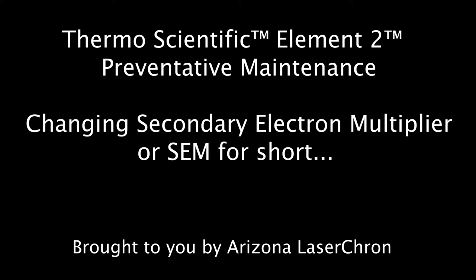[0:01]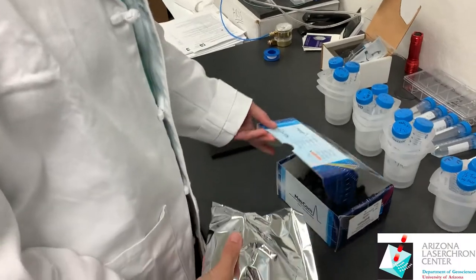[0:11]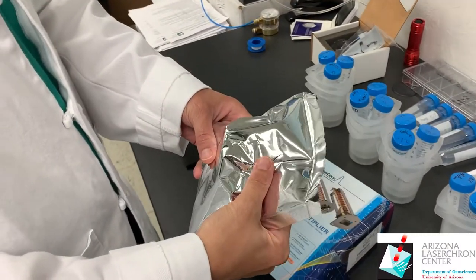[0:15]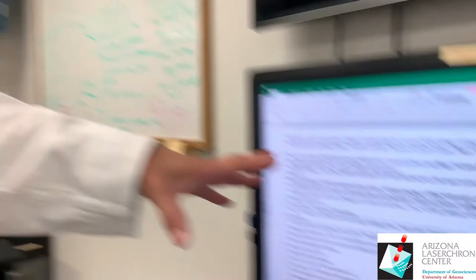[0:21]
Morning, we're going to be changing out the secondary electron multiplier in the Thermo E2 mass spectrometer. First thing you do after you take it out of the box is squeeze the pillow. You want to make sure that the argon is trapped inside there. These are all the instructions we're going to be following.
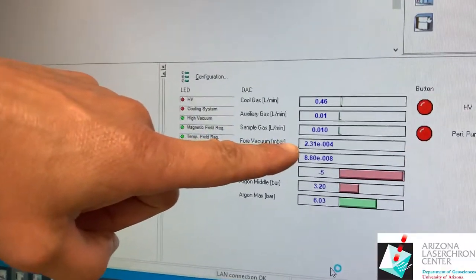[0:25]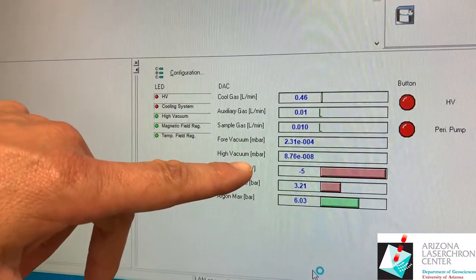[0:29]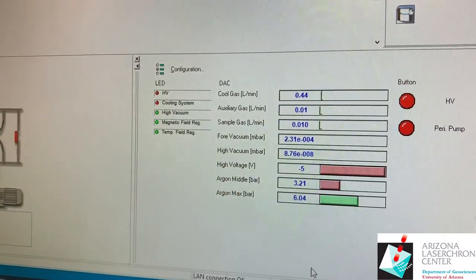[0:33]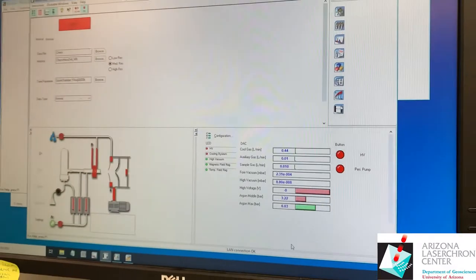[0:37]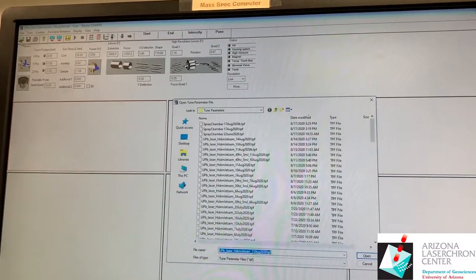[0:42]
The fore vac is maxed out at 2.31 times 10 to the negative 4, and the high vacuum is at 8.8 times 10 to the negative 8. It's good to note these pressures so that you know where you started. And we're going to open the most recent tune file.
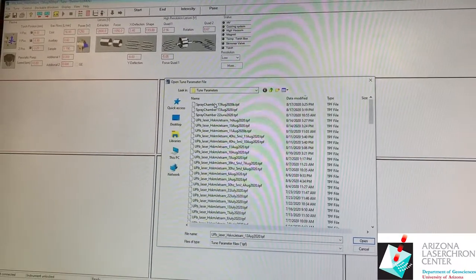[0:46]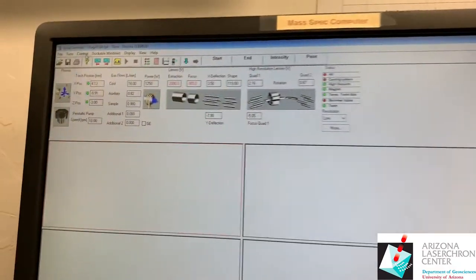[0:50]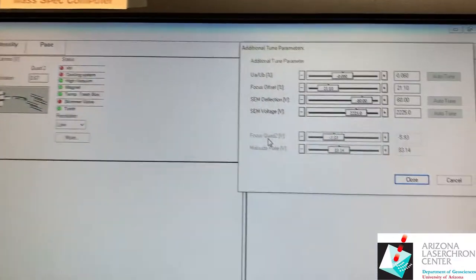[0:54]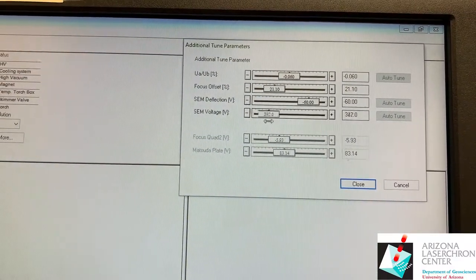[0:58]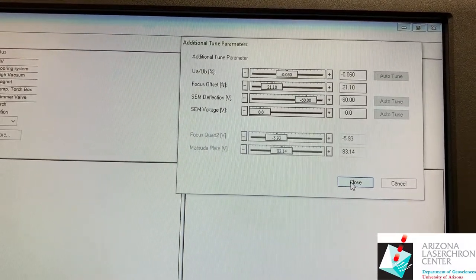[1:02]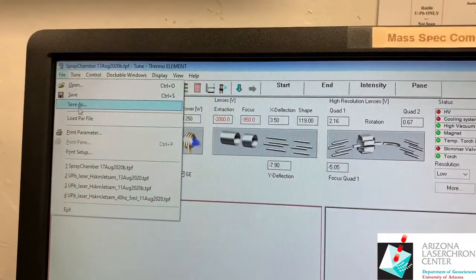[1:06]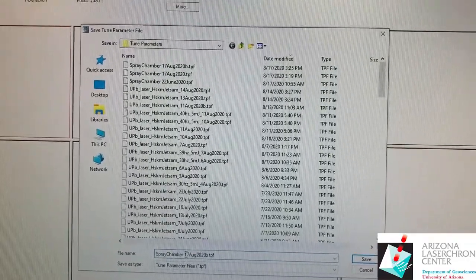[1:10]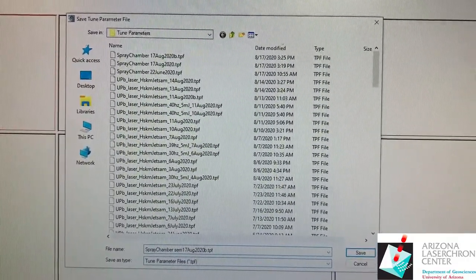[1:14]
And we're going to go to control, additional parameters. The SEM voltage was set at 2225. We're going to take the SEM voltage and set it to 0 and hit close, because that'll save it. And then we're going to go file, save as, spray chamber, SEM 0.
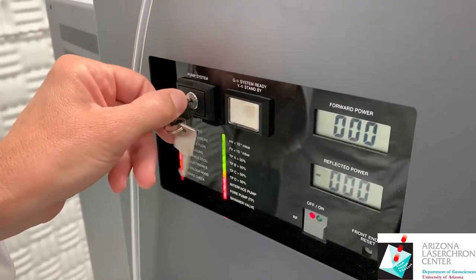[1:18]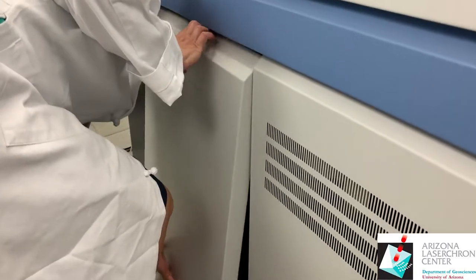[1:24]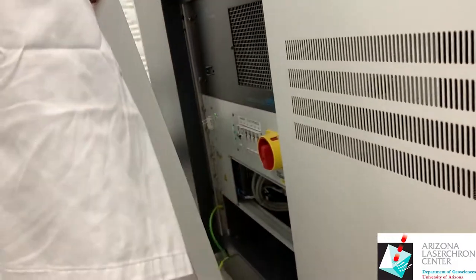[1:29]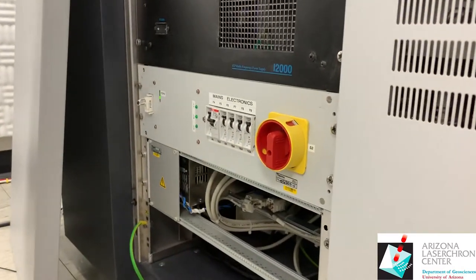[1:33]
Now we wait for the turbo pumps to wind down. We're going to turn off S2, which is the electronics.
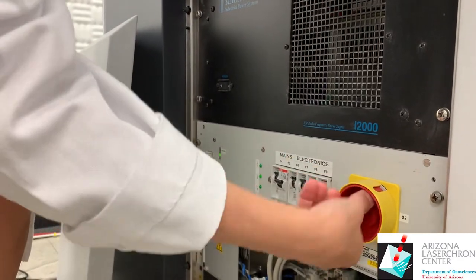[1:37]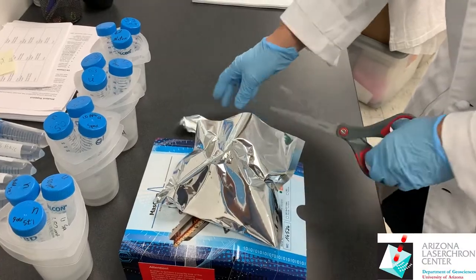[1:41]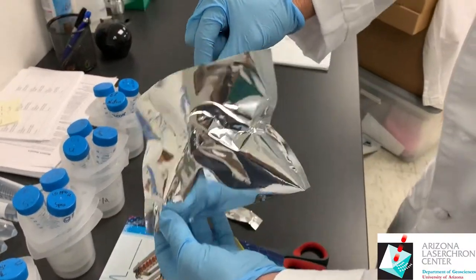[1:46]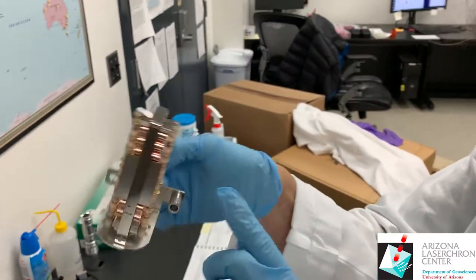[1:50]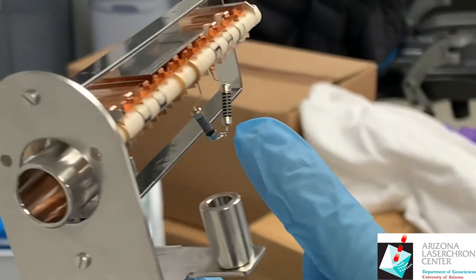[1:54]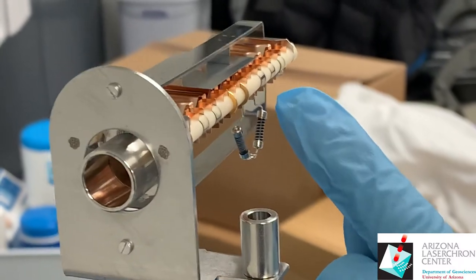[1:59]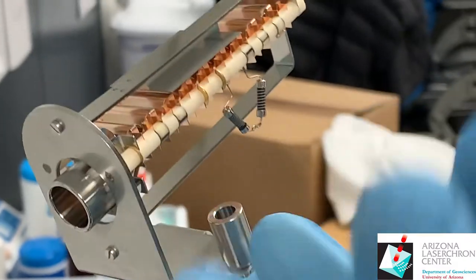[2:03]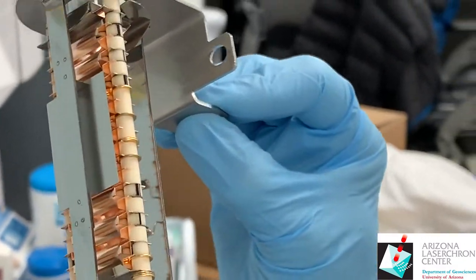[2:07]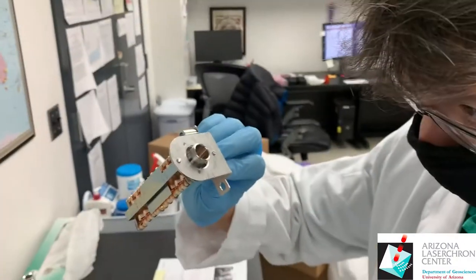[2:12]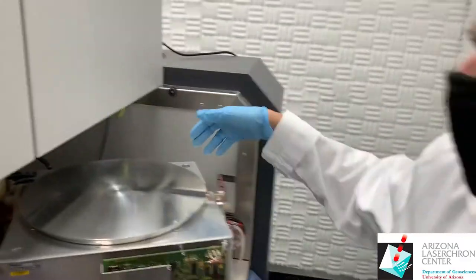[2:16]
You want to take this thing out and you want to look at it. So there's two resistors on this one. One resistor or two, it doesn't matter. And make sure that the connections look good. There's no wires sticking out. Look at the surface, make sure it's not bent. Nothing bad happened during transport. Looks good. All right, now we'll remove the cover.
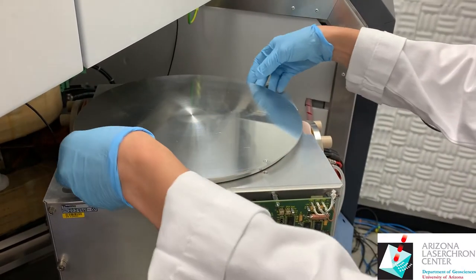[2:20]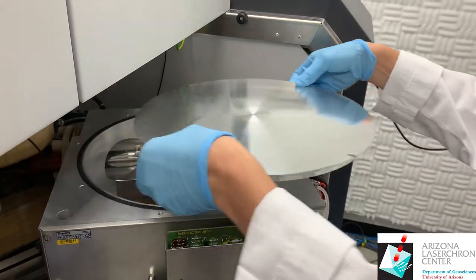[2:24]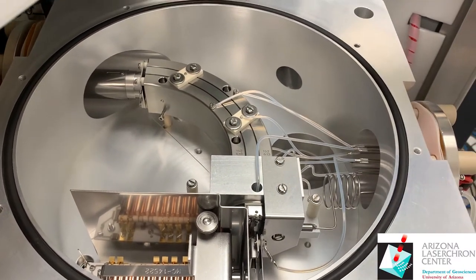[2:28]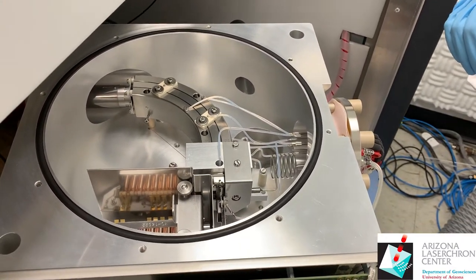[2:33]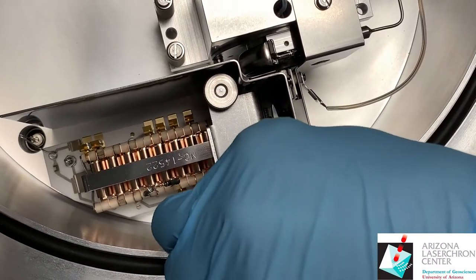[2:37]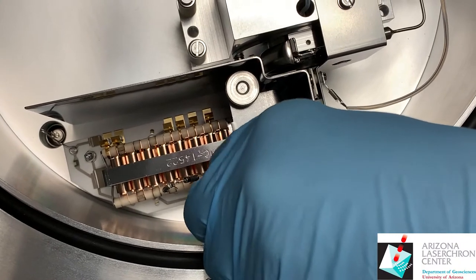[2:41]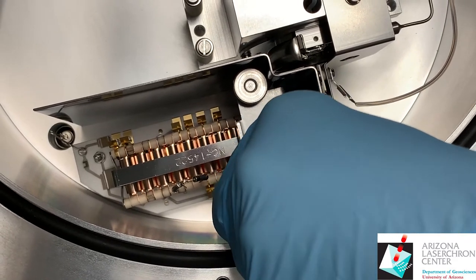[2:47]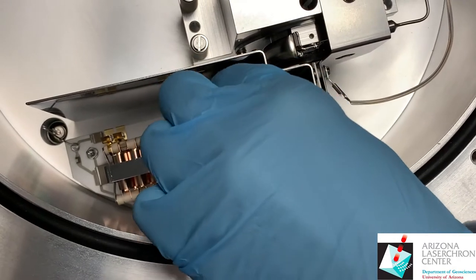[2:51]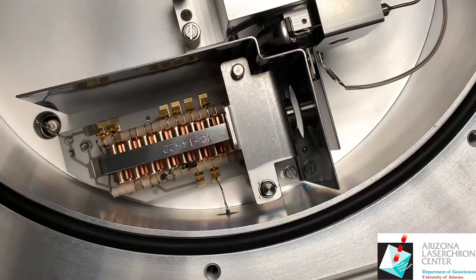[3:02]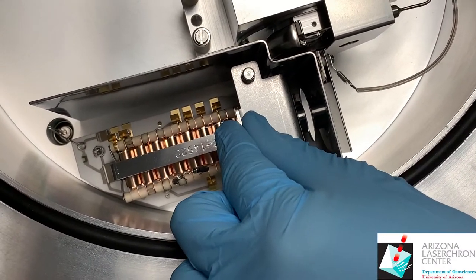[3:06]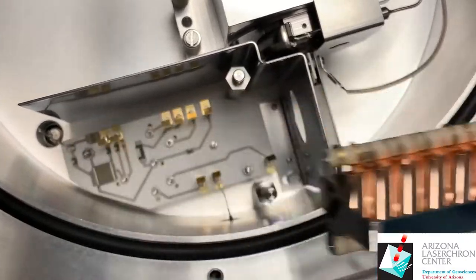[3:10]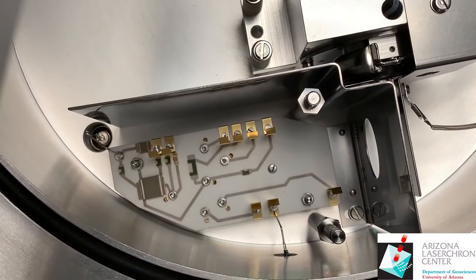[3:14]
We don't screw it down or anything. Okay, the first thing I do is check inside the housing and make sure there's no burn marks or anything unusual. I'm going to remove these two knurled screws. Grab it by this little handle here and lift it straight up. I'm then going to visually inspect the conversion dynode. It's a little steel plate.
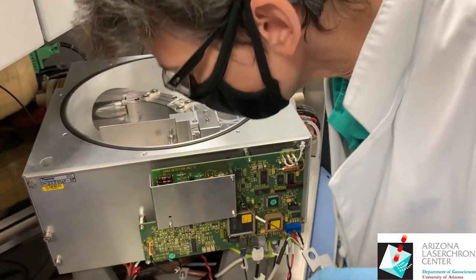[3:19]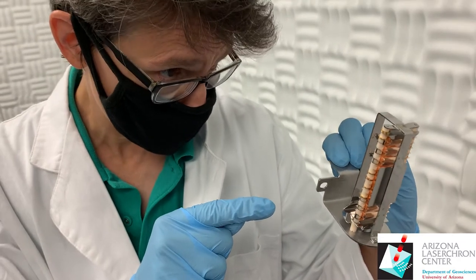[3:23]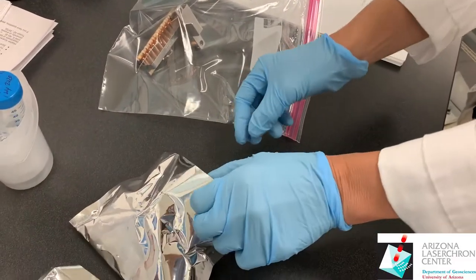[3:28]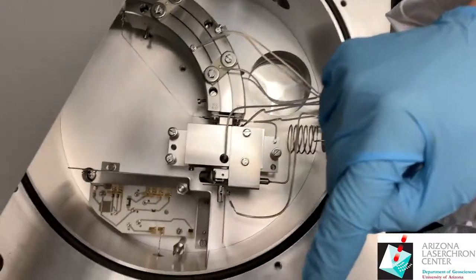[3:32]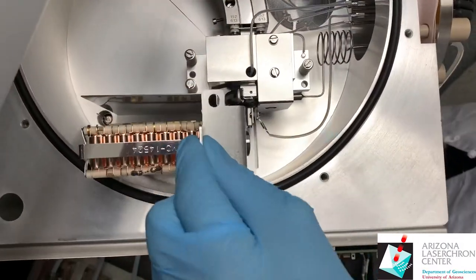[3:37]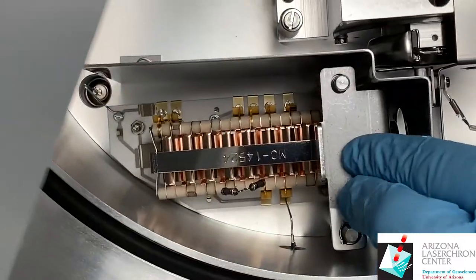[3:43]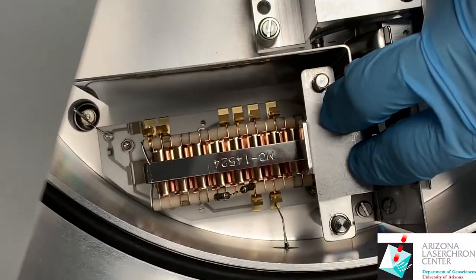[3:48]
Look at the old SEM and make sure that it doesn't look damaged. We can fill it with argon if we want to. Get the new SEM contacts. You want to make sure that these contacts attach to the contacts on the board there. Everybody looks like they're seating at the same place. The manufacturer put them together nicely. All right, now it's seated properly.
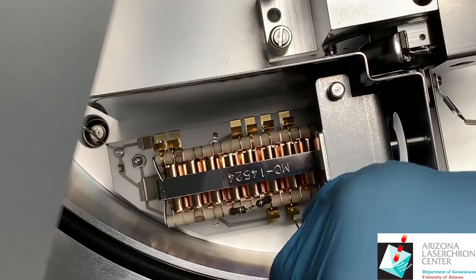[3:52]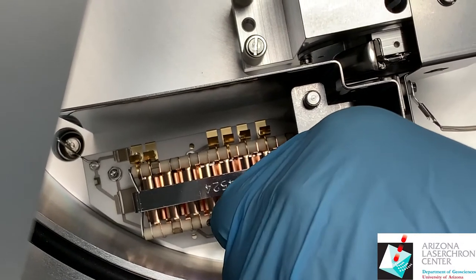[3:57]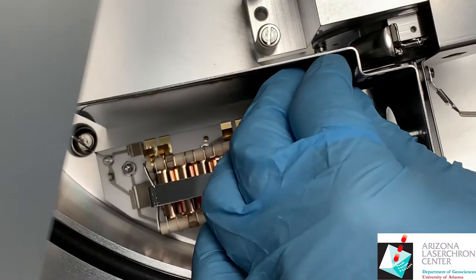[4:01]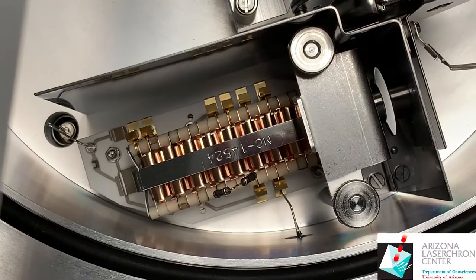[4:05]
Got to give a little oomph. Clip in those contacts, and then finger tight the screws. I'm going to look at it one more time.
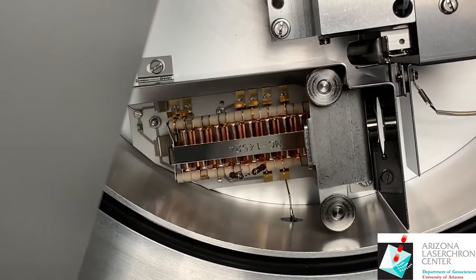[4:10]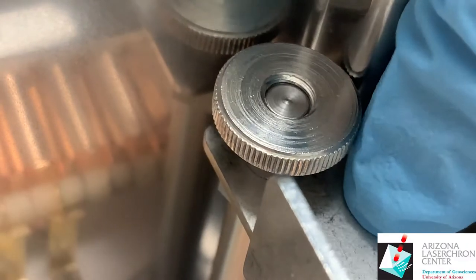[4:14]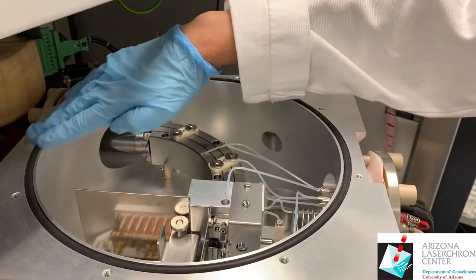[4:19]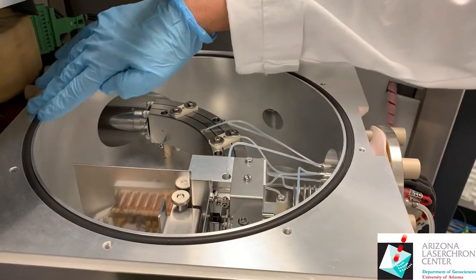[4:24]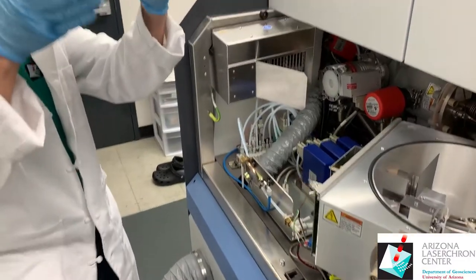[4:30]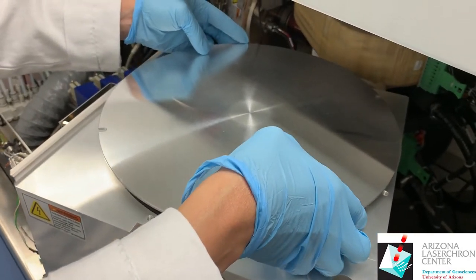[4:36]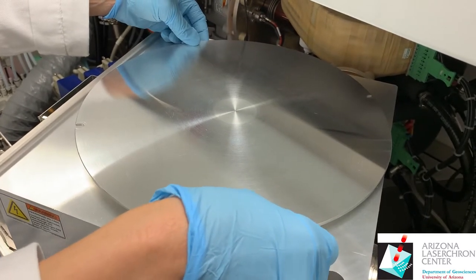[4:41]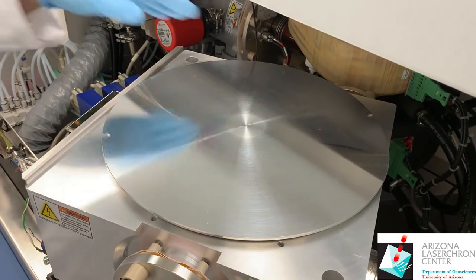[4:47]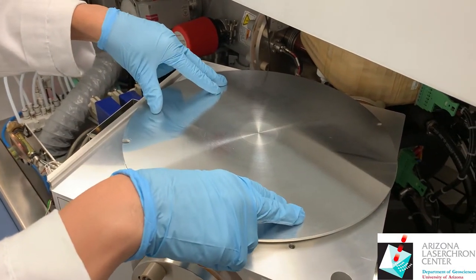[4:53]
So now once the SEM is in, just make sure that this ring is seated properly in its canal, so when you put the lid back on, you'll get a nice seal. We'll put the lid back on. You find the groove, like the groove in the hot dog. Make sure you find the groove so that it's seated where it should be.
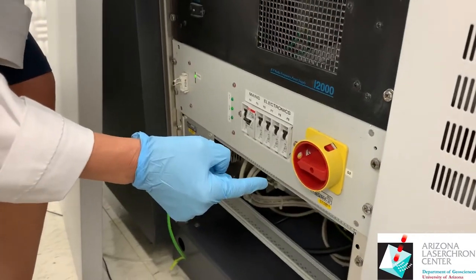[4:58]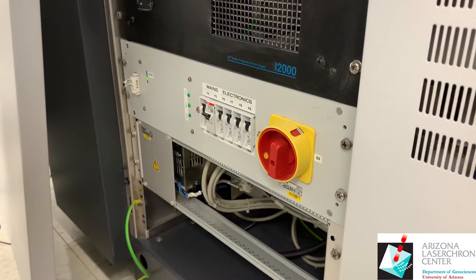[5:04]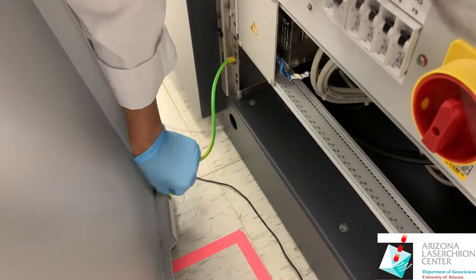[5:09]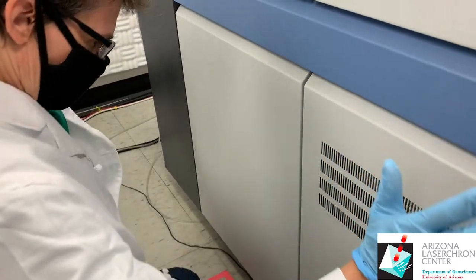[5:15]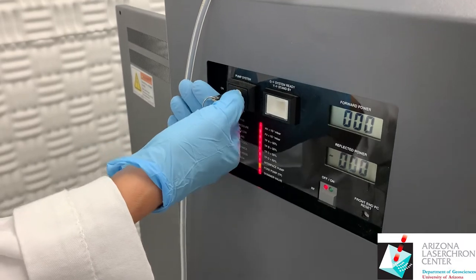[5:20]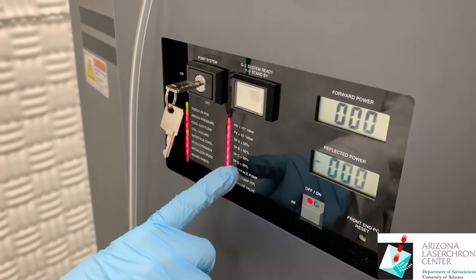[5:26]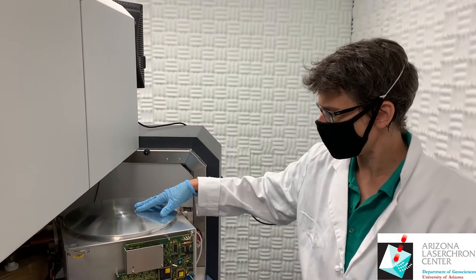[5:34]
Now we'll turn back on the S2 switch for the electronics, and turn on the turbo pumps. We got the fore pump working first. Now we're going to wait for A, B, C, and D turbo pumps to kick on. A is always last to kick on. We already have a vacuum happening. I can feel that this lid is no longer loose. There's no play in it.
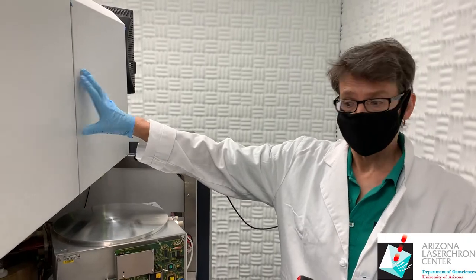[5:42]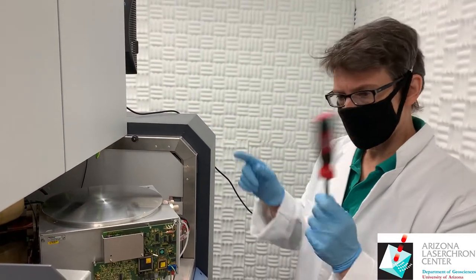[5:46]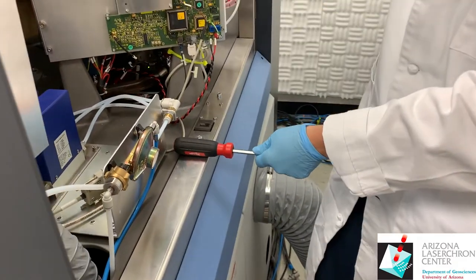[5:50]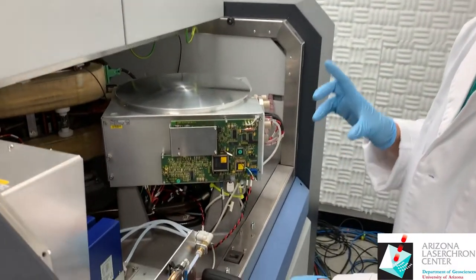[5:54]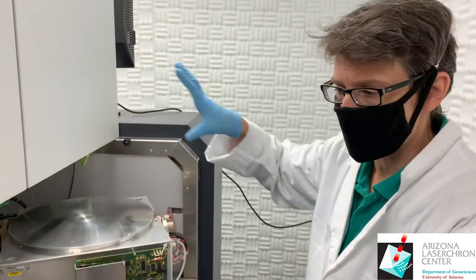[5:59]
We're going to close the cabinet lid to keep the temperature inside the instrument. But we're going to stick the screwdriver next to the slot that fits the lid. That will keep HV from turning on. Now granted, we have it turned off in the software, but this is a fail safe, if you will.
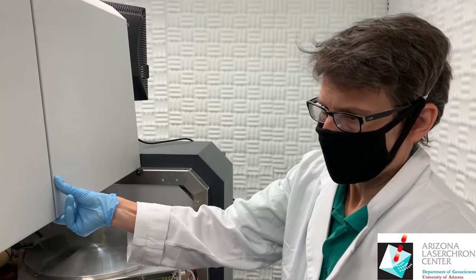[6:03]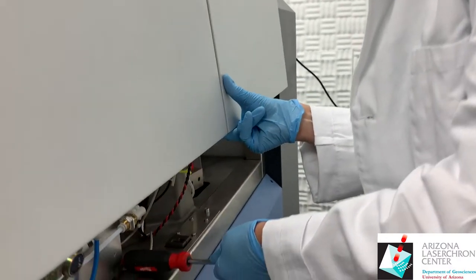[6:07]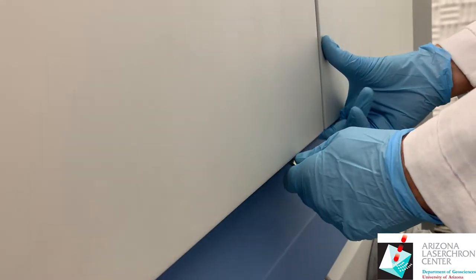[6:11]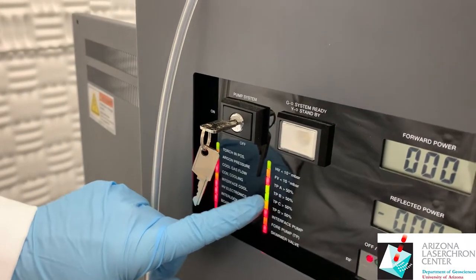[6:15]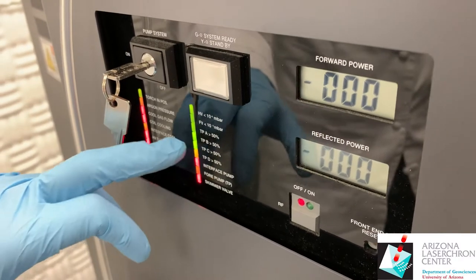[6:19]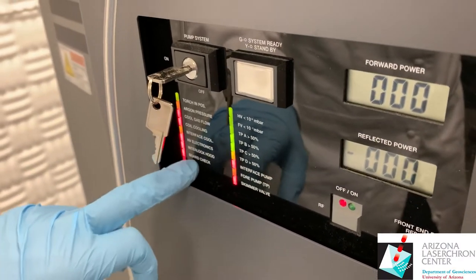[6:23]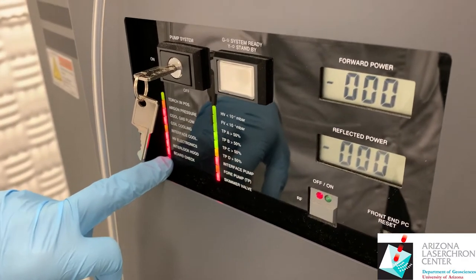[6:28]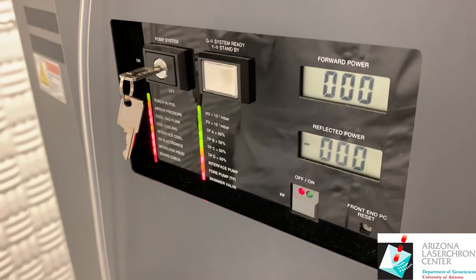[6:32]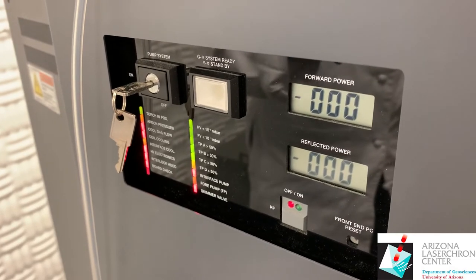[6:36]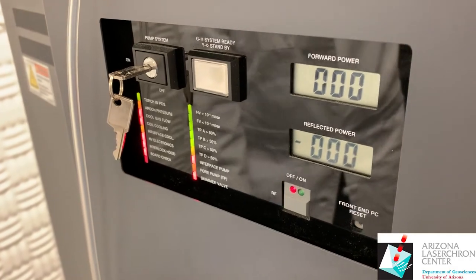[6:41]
The turbo pumps B, C, and D are on over 50%. So now after a few minutes, TPA is finally kicked on. You'll have this board check light up until you restart the instrument. So don't worry about the board check light, unless it doesn't go off after you're ready to tune. That board check light comes on whenever you open the hood.
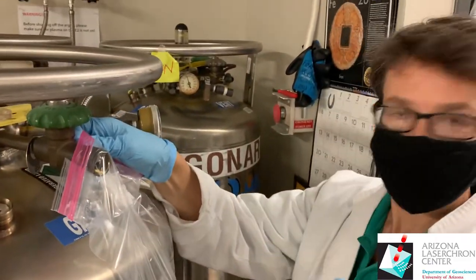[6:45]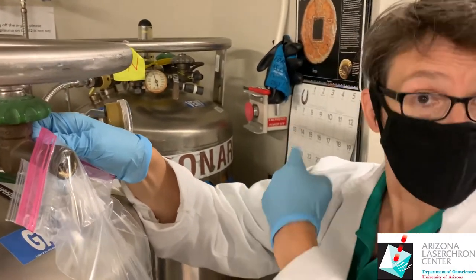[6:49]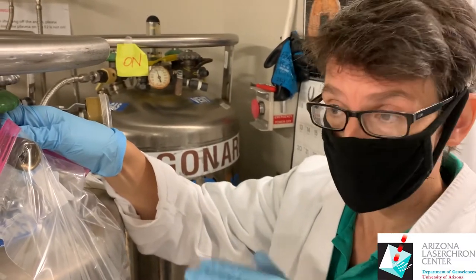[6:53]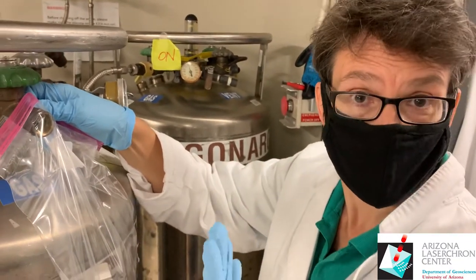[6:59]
So we're going to fill this bag with argon. It's a good idea if you want to reuse that SEM. If the one you put in is bad, you can put the old one back in the interim to get a new SEM. You should fill that bag with argon to preserve that SEM as long as possible.
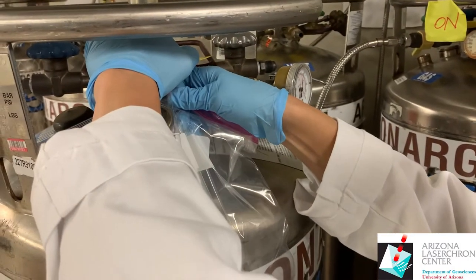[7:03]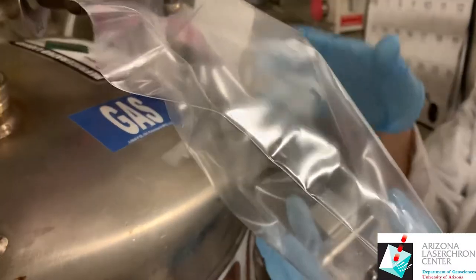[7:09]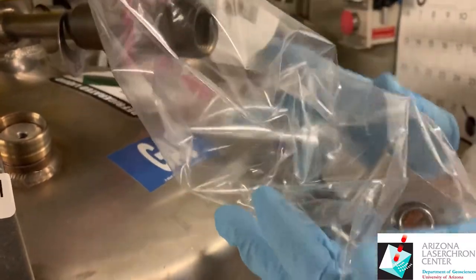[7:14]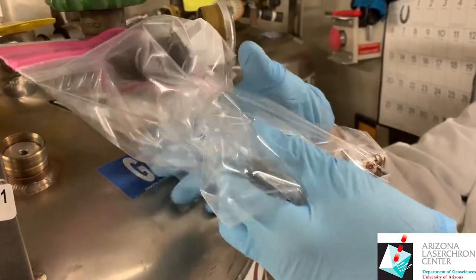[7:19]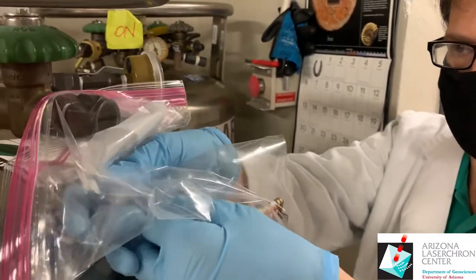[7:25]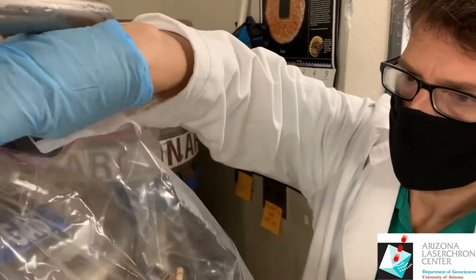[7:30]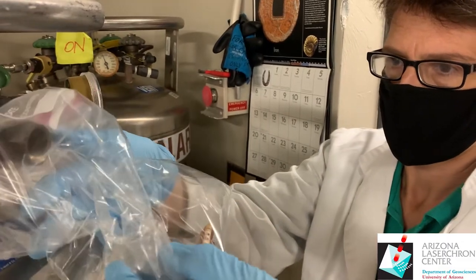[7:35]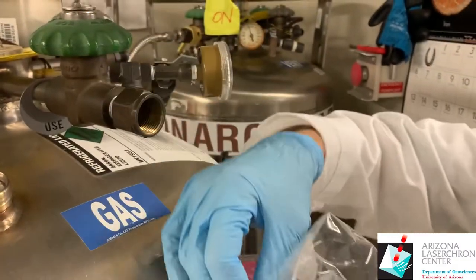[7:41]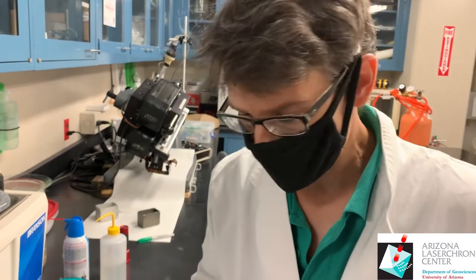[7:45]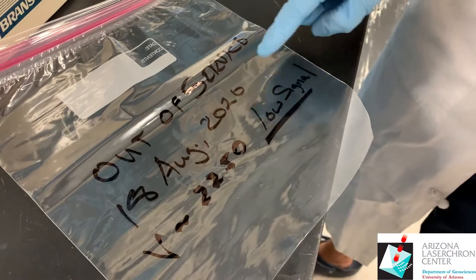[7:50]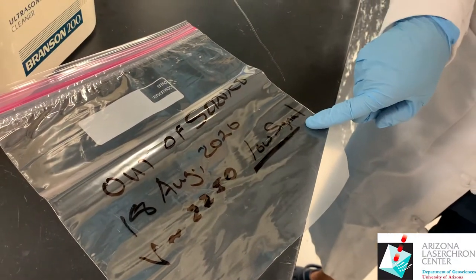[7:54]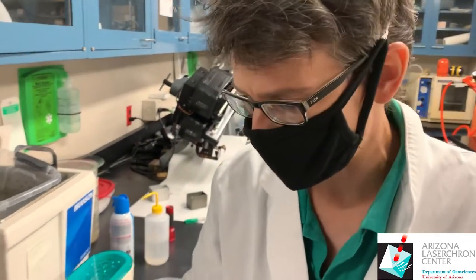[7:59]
Air gets out. And then we're going to double bag it with argon just in case. It's also a good idea to write down when it came out of service, the voltage that it was maxed out at, and a reason why you changed it if it wasn't just the regular life of the SEM.
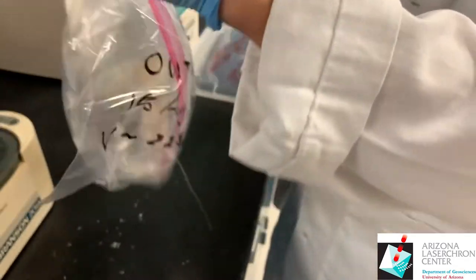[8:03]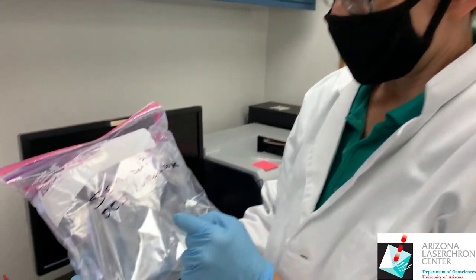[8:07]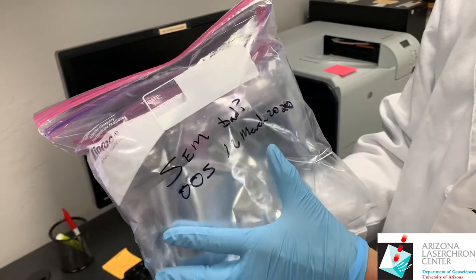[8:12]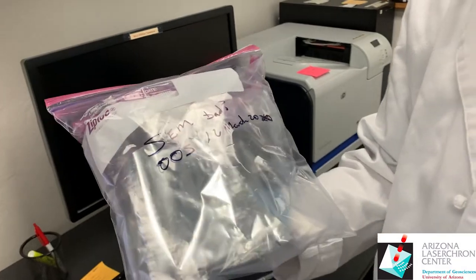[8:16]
And we're done. Here is a bag that we filled with an SEM that we changed 6 months ago. You can tell that the argon is still in there because it's nice and puffy. So it really does work.
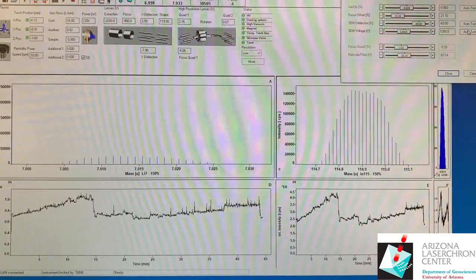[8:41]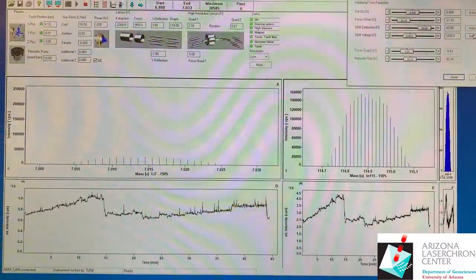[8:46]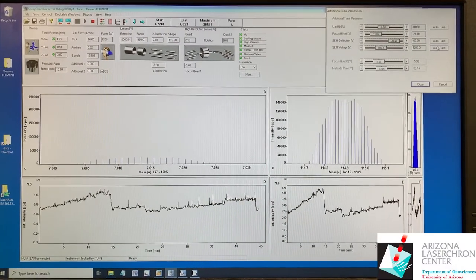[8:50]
We've changed the SEM. We pumped down overnight, 12 hours at least, for off-gassing the SEM. Our high vac pressure was 10 to the negative 8, so we've started the instrument. We warmed up the magnet, and we're going to now introduce the Thermo solution, which has indium 115. We're going to increase the SEM voltage to where we see about 150,000 counts on indium 115, and then we're going to let that sit for 2 hours.
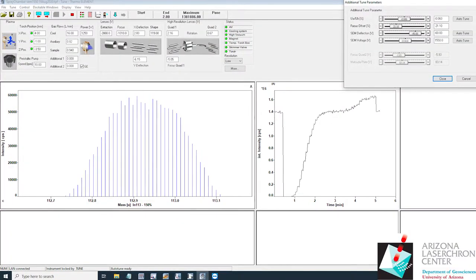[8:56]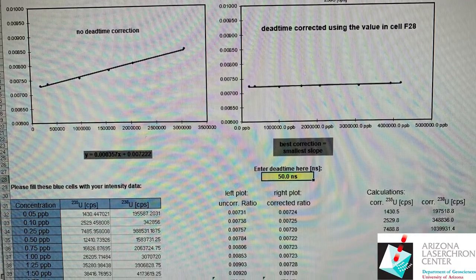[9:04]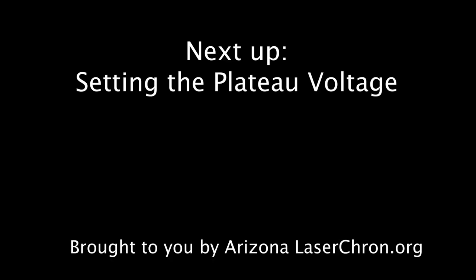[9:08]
It's called burning in the SEM. After we burn in the SEM, we'll do a plateau test to set the SEM voltage, and then we'll measure dead time. And that concludes changing out the SEM.